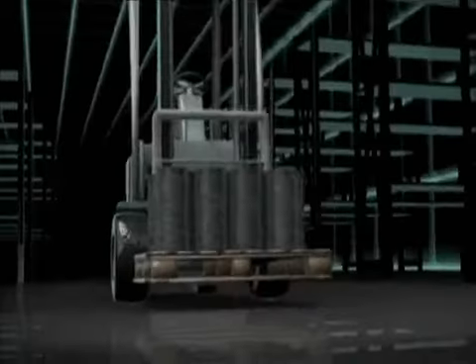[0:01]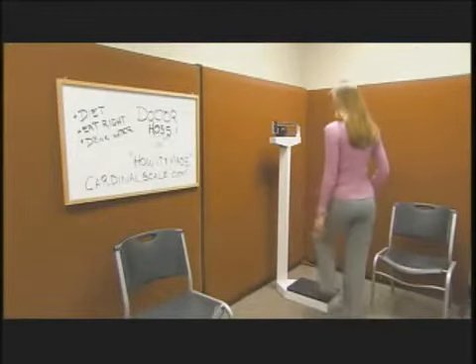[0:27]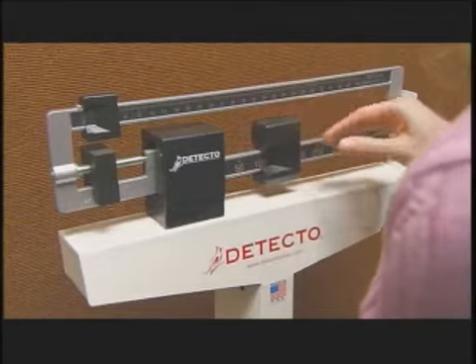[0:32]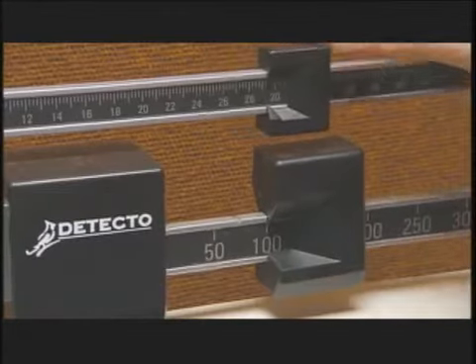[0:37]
This scale compares the weight placed on the platform with a standard weight, known as a poise, that slides along an off-center weighbeam until it balances.
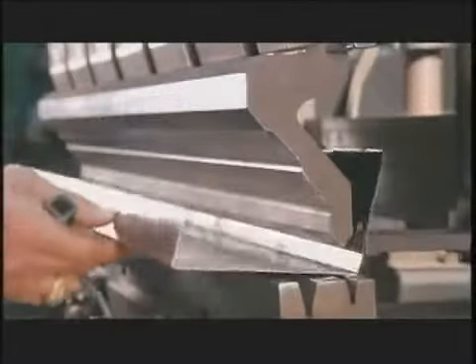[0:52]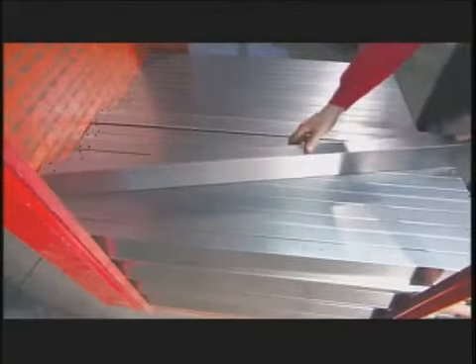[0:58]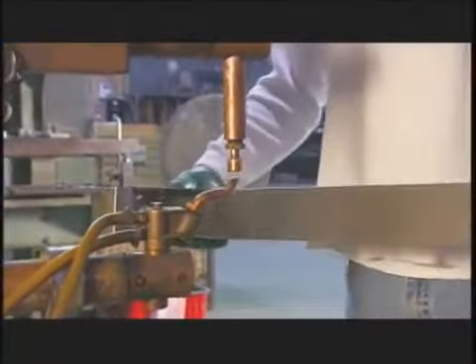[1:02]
A punch press forms sheet steel into the head or top of the scale's column. Workers form the column from another piece of steel using this press brake. Then they spot weld the head and column together.
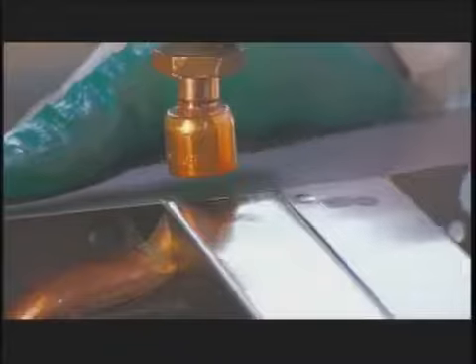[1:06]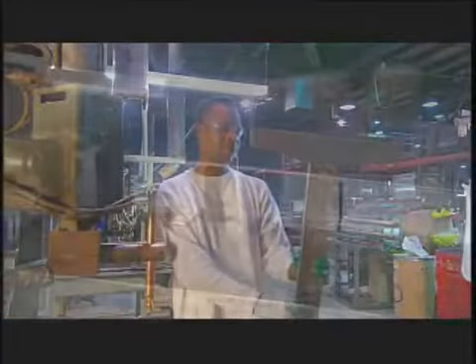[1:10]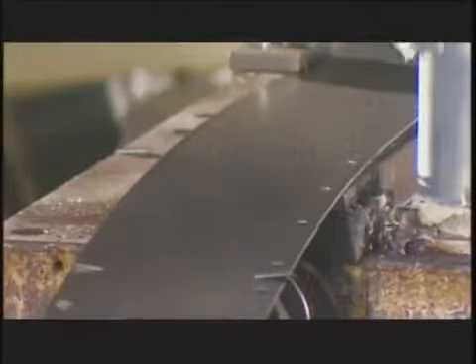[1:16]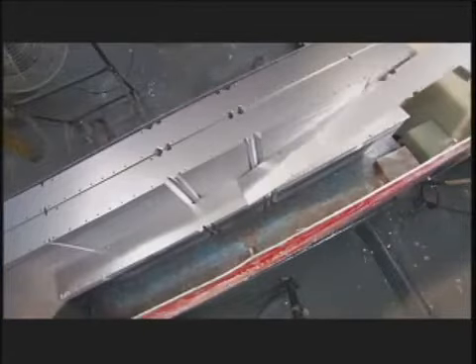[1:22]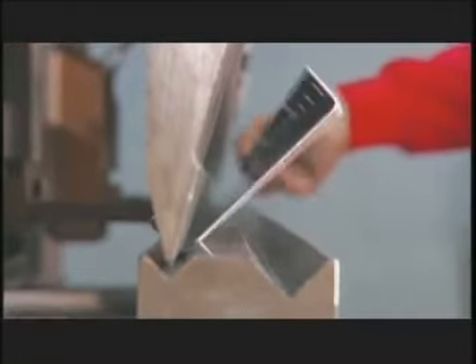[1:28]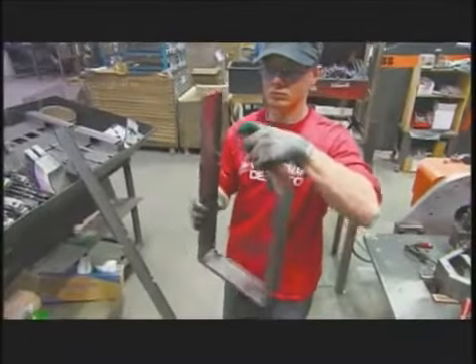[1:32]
Another machine stamps out lengths of steel that will form the frame for the scale's base. Workers use the press brake again to bend both sides of the steel lengths. Then they fold it by hand to form the frame.
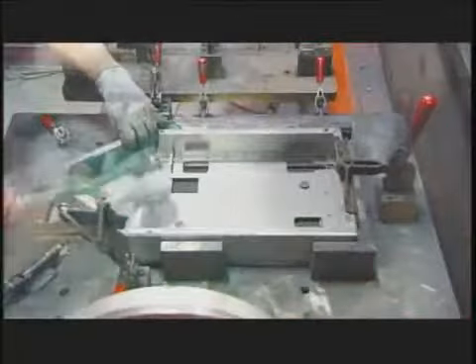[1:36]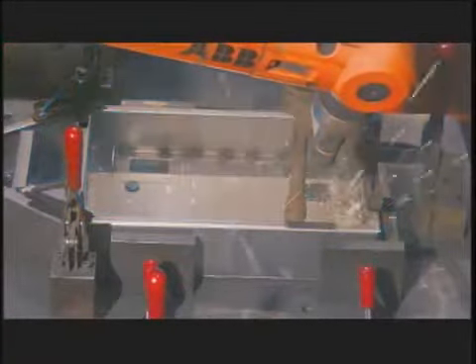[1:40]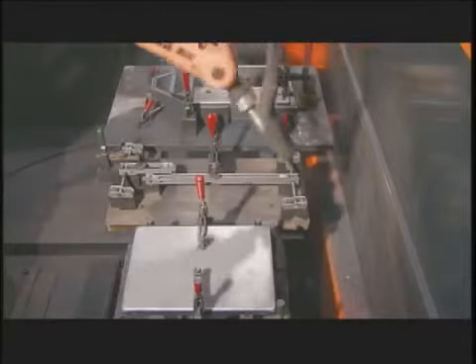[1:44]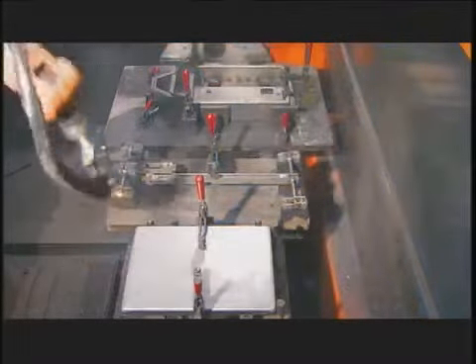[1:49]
They clamp the frame onto a base, and this robot welds them together. The robot moves on to weld other components to the scale, such as the lever mechanism and the base plate.
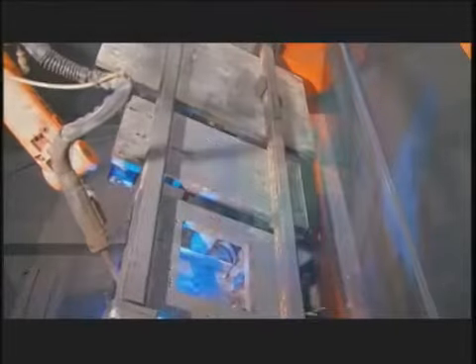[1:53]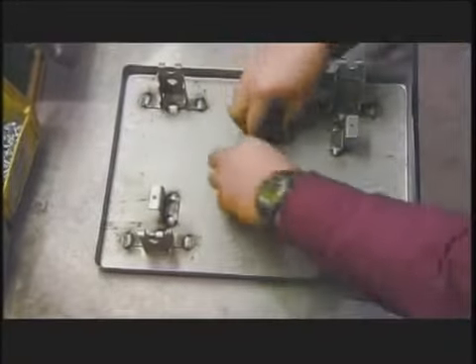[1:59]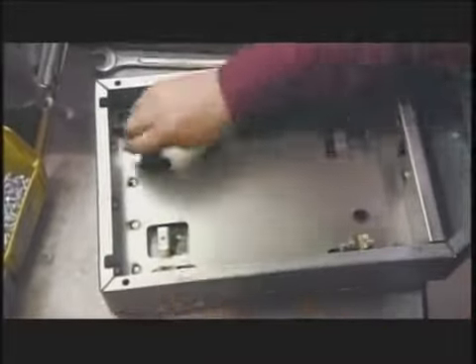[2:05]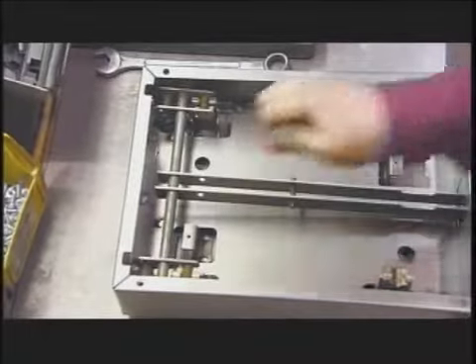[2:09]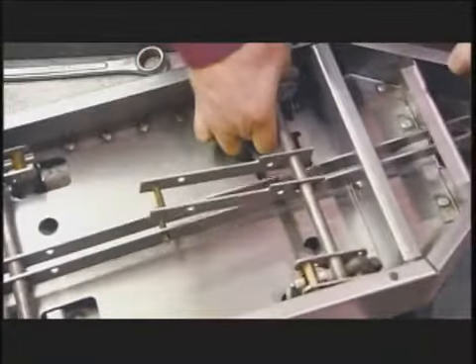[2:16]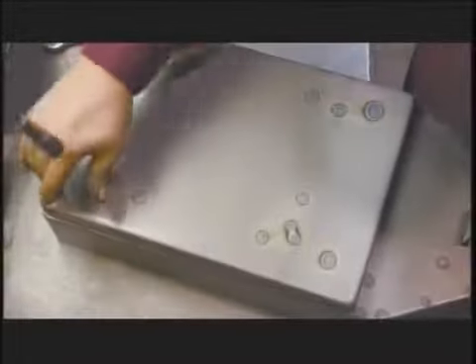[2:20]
Now workers place steel bearings at each corner of the base where the lever mechanism will rest. Then add the base frame. Next, they install the long lever. Then the short lever. A C-clip joins them together. Once it's right side up, the lever mechanism hangs off the platform.
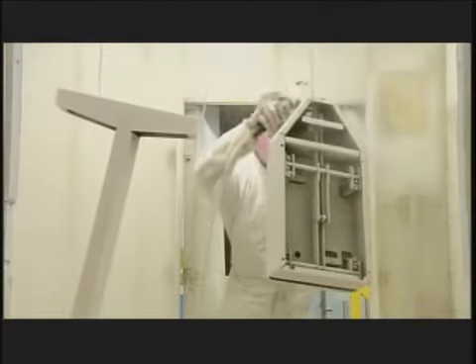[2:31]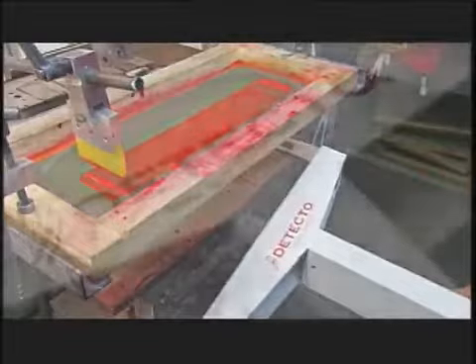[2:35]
The columns receive a coat of electrostatically charged paint that evenly coats the metal for a flawless finish. Once it's dry, a machine silk screens the brand name onto the column.
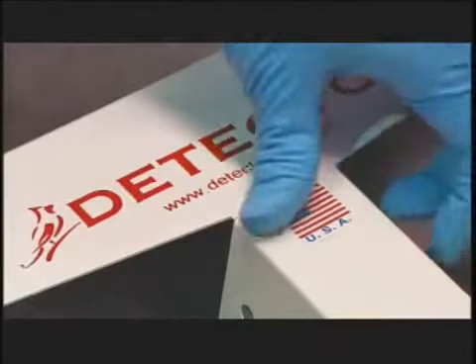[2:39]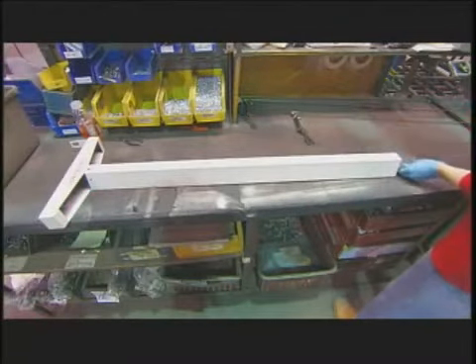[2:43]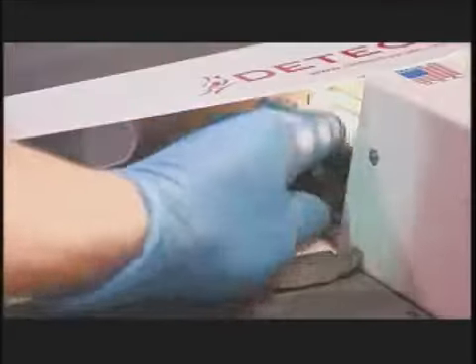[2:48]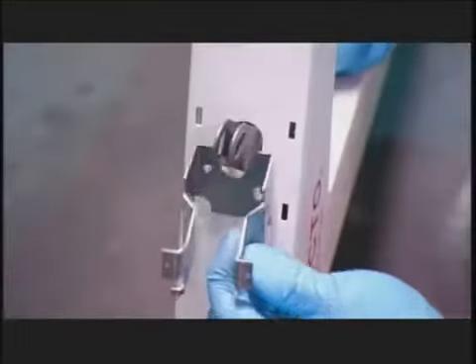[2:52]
Now for the final assembly. A worker inserts a 1.2 meter steel rod that will tie the weighbeam to the levers. He works the rod up through the column. Then at the column's head, he screws it to the weighbeam's shelf.
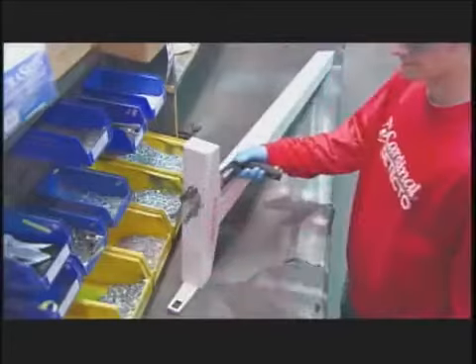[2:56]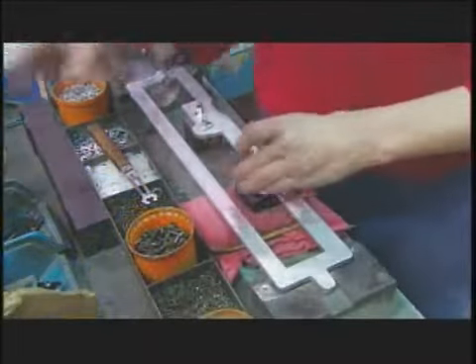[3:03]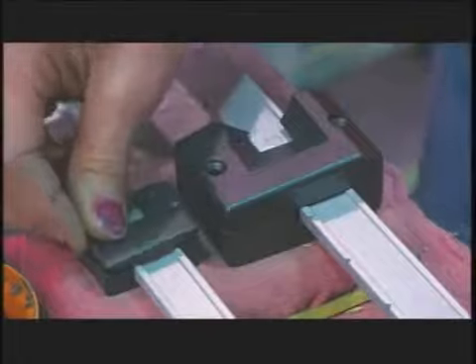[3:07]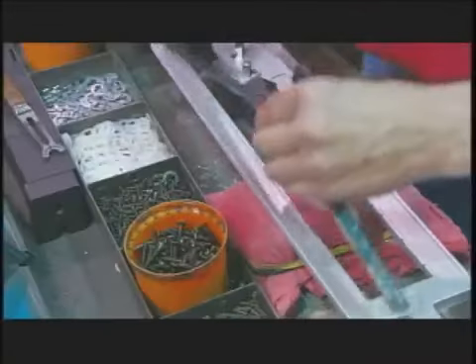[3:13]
Another worker hammers the large poise into position on the weighbeam, then the smaller poise. They screw onto the beam in two parts so they can glide freely. She applies a gauge onto the beam that indicates the weight measured in pounds, from 0 to 350.
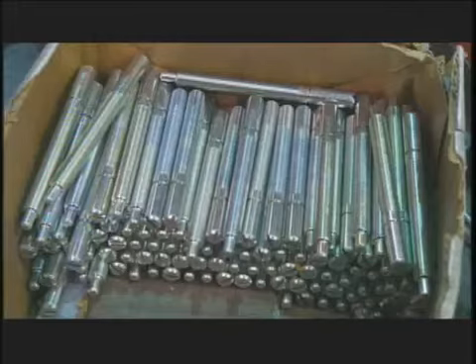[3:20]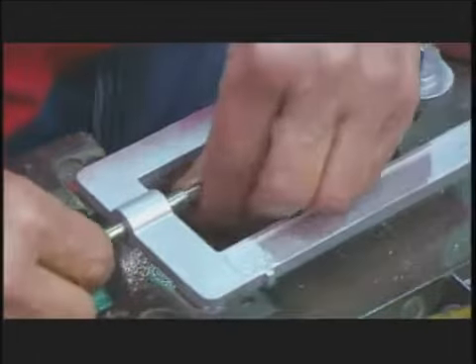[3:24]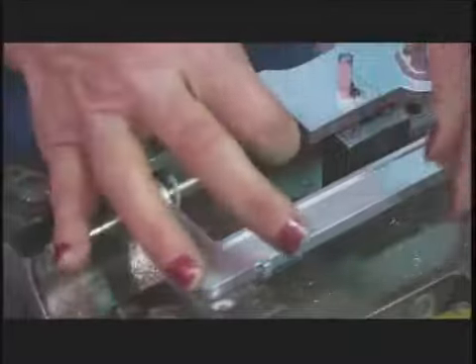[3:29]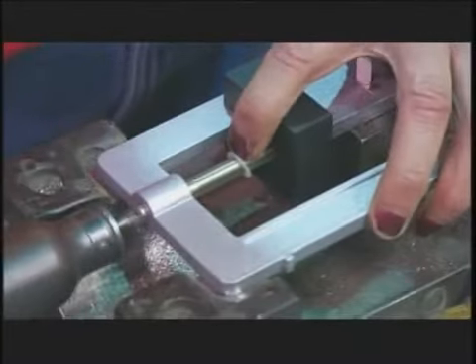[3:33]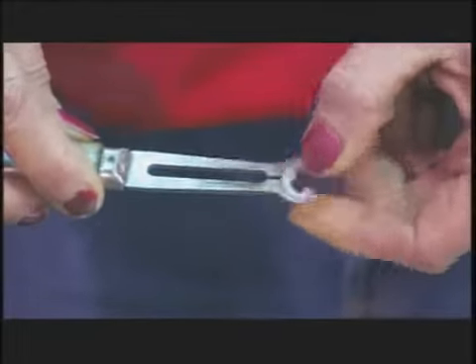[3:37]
Now she takes a zero adjustment screw and spring loads it onto the beam. This allows the beam to balance when the poises are set at zero and the scale is unweighted. A retaining ring holds the screw in place.
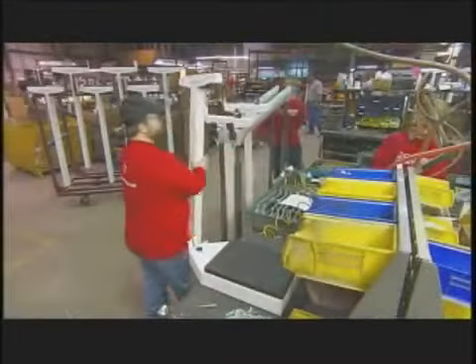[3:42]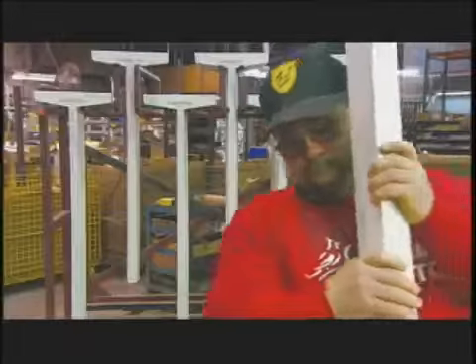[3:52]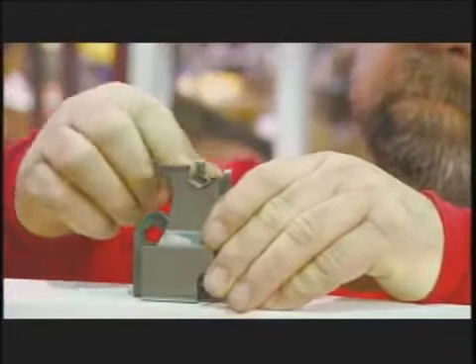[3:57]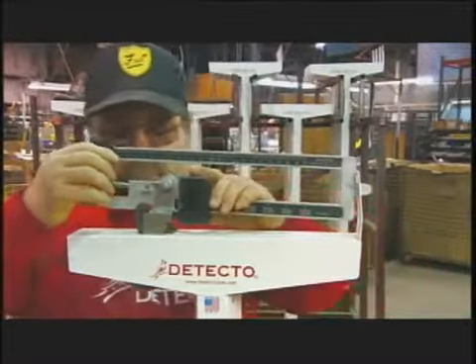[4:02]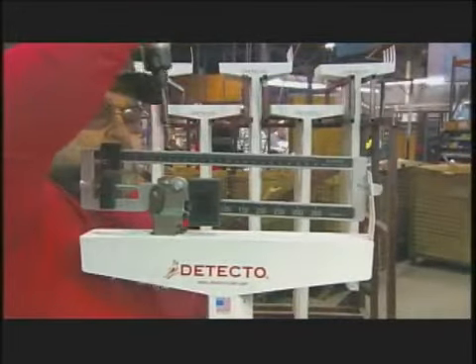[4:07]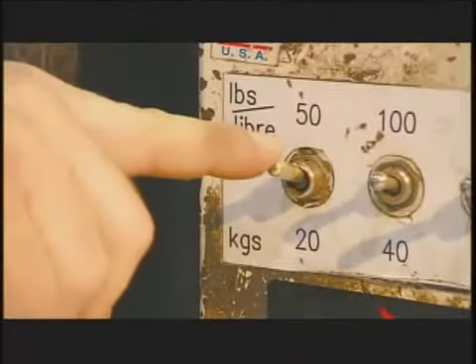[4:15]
At the assembly line, workers fasten the scale's column to its base. They cover the pivot to protect it from wear and set down the weighbeam that balances on it. Then they connect it to the steel rod that comes up through the column from the base. Once the weighbeam connects to the lever mechanism at the base, the scale is functional.
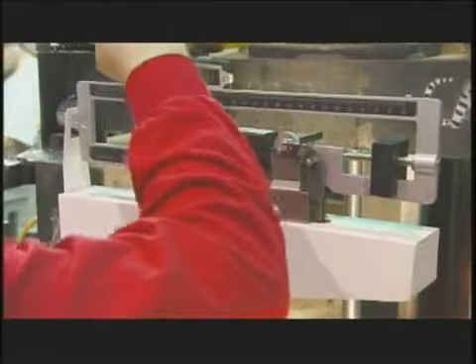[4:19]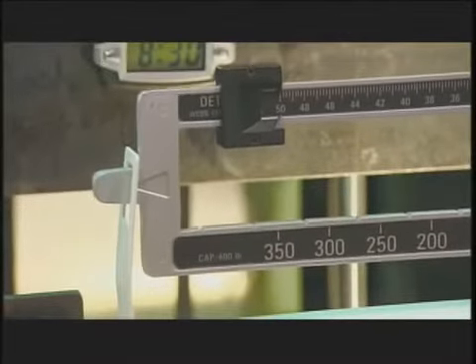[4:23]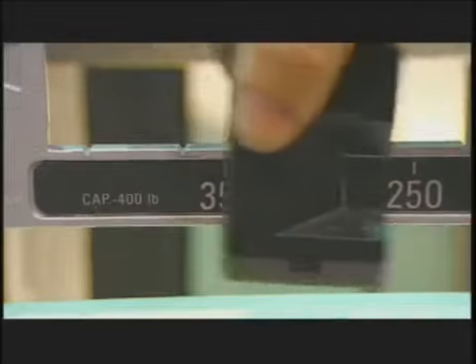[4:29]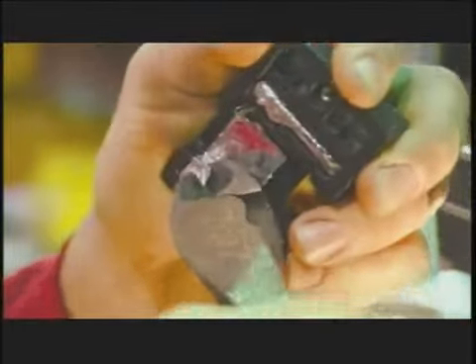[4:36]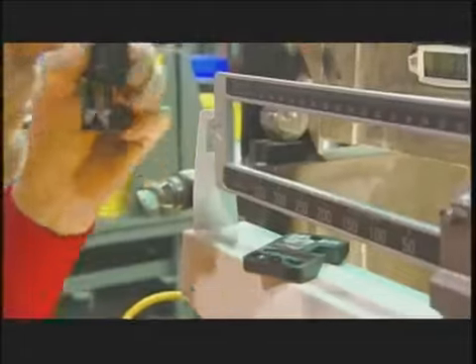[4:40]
Now it's time to make sure it's accurate. Each scale goes to a weigh station, where workers check the readings in 20 kilo increments. If the readings are off, workers go back and remove some lead from inside the large poise so the scale calibrates perfectly. Just a few grams of lead can make all the difference in accuracy.
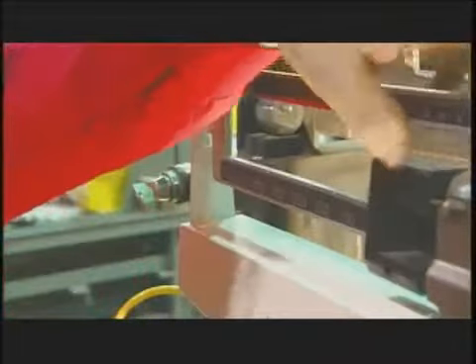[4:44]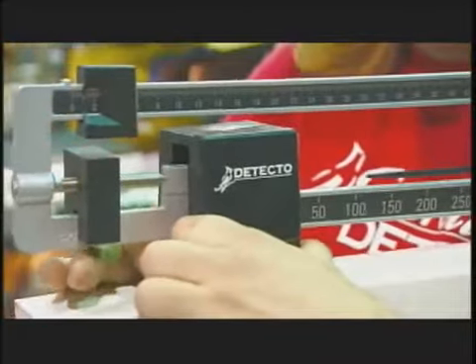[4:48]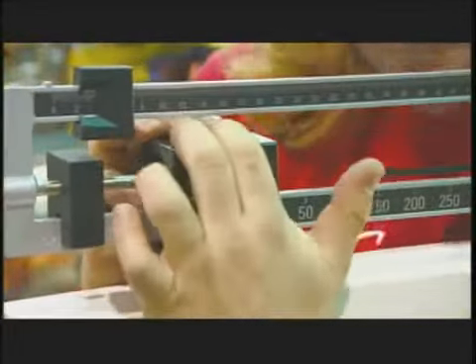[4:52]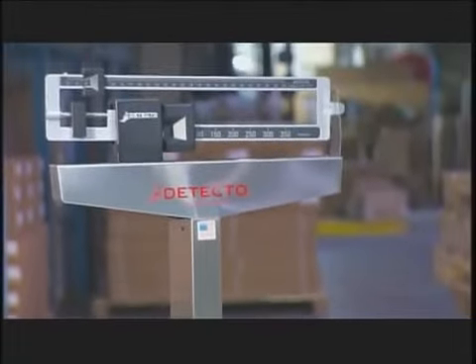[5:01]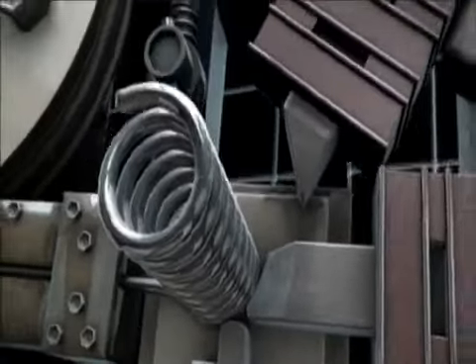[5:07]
Finally, they place a plastic cover over the working parts, and the scale is complete.